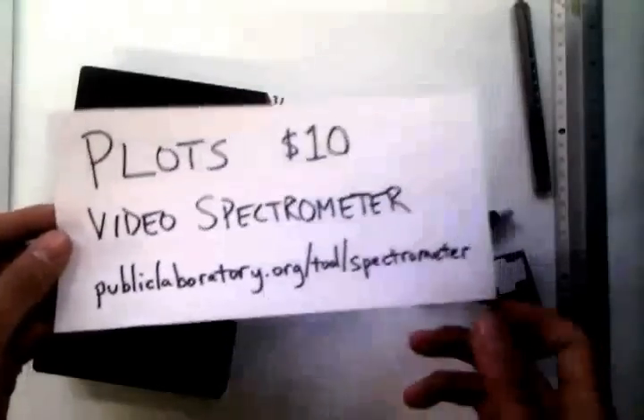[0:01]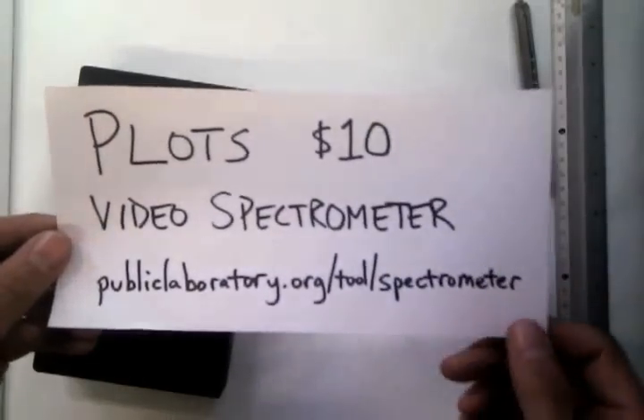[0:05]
This is a video tutorial for the Public Lab $10 video spectrometer. You can read more about it at this web address. And to start with, we're going to take
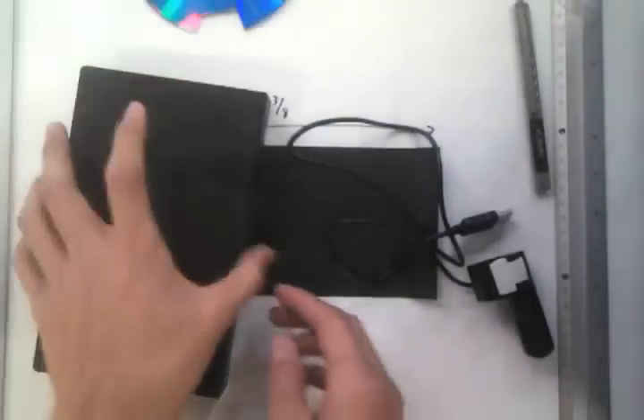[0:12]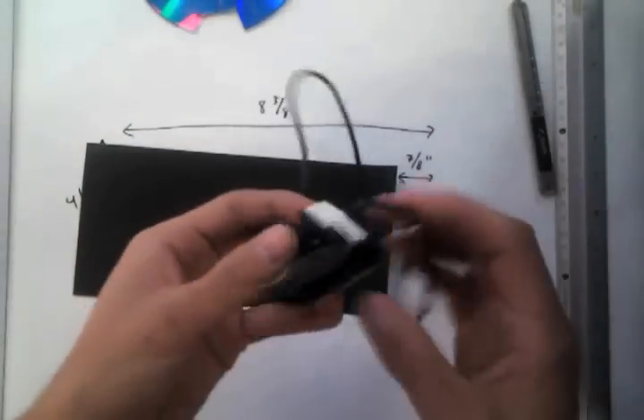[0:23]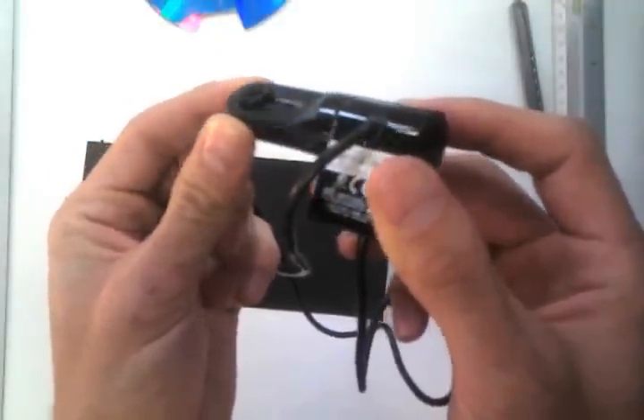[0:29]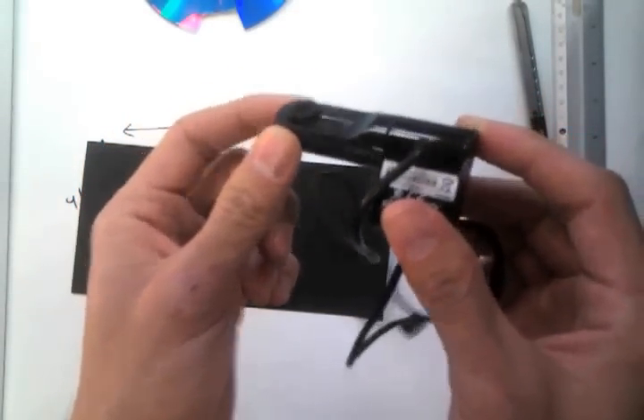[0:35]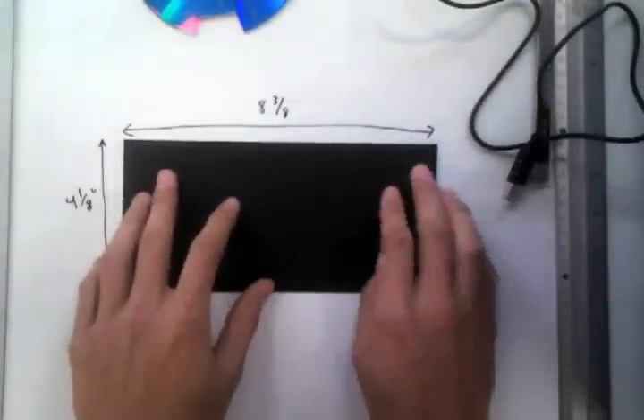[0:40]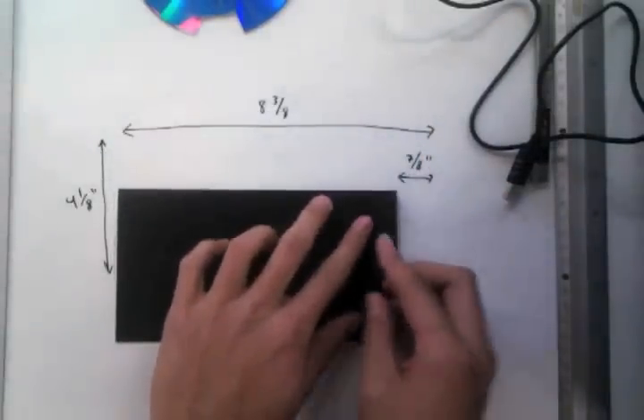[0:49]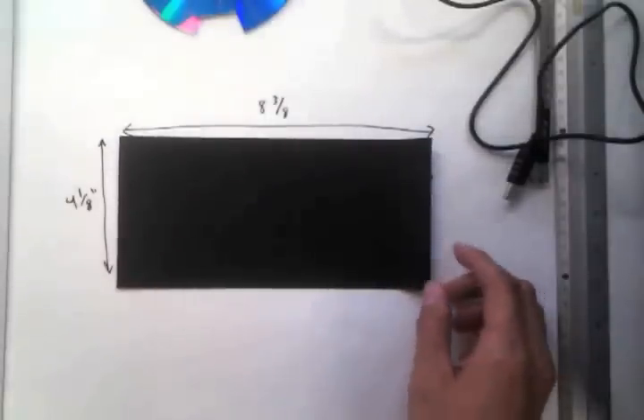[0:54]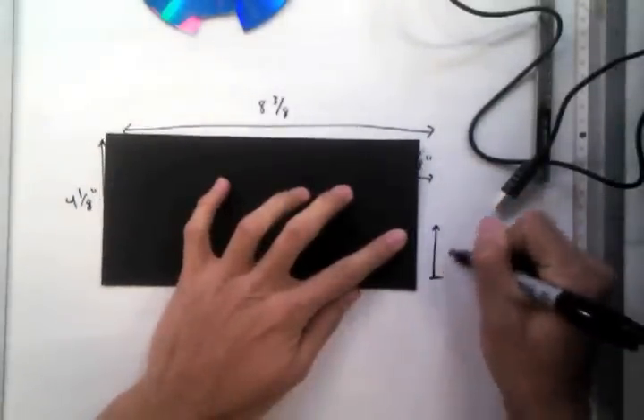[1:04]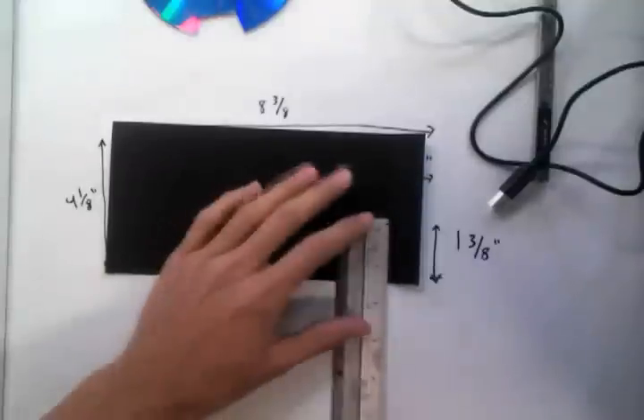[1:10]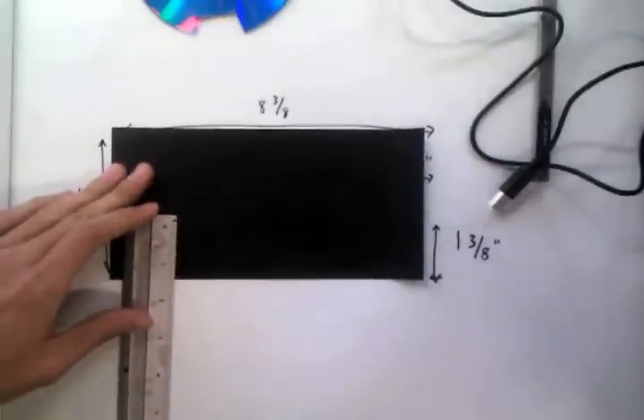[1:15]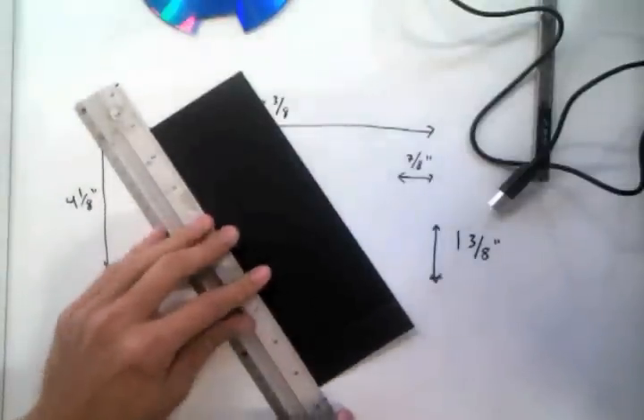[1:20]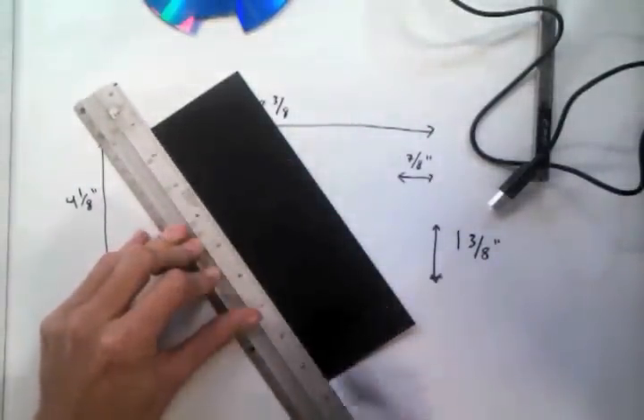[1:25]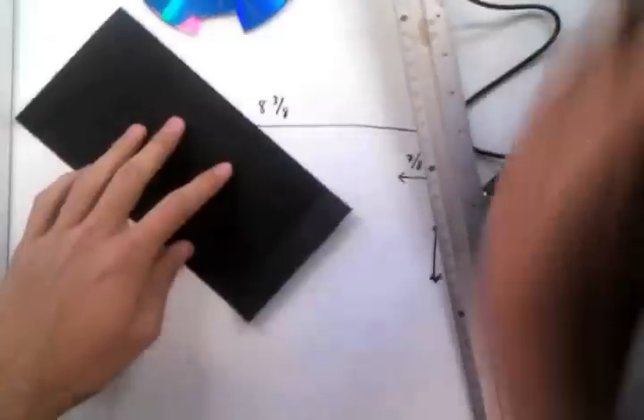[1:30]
And now what I'm going to do is draw a line on the card that's 1 3/8 up from the bottom. So that's 1 3/8 from the bottom here. Let's just get that right. And I'll just draw along that. Doesn't have to be too precise. And then I'm going to do something quite careful here.
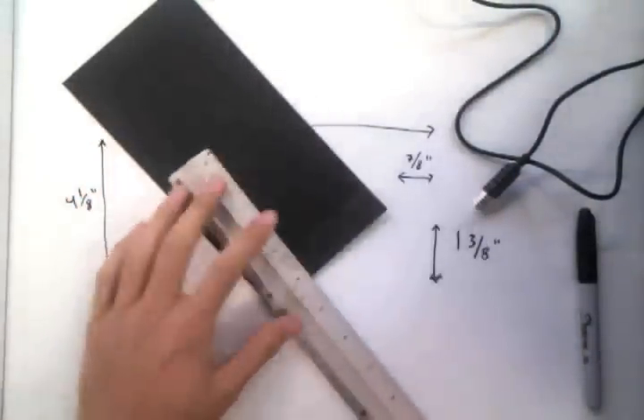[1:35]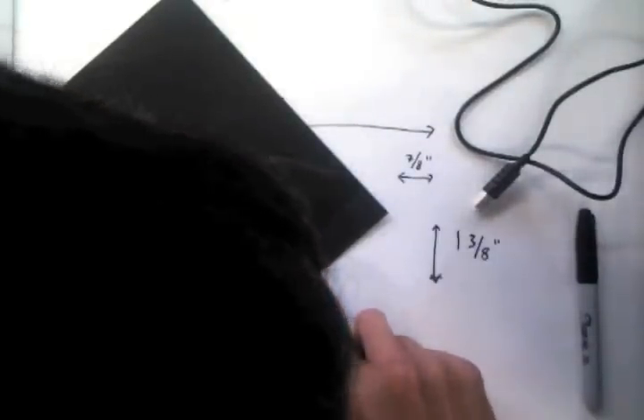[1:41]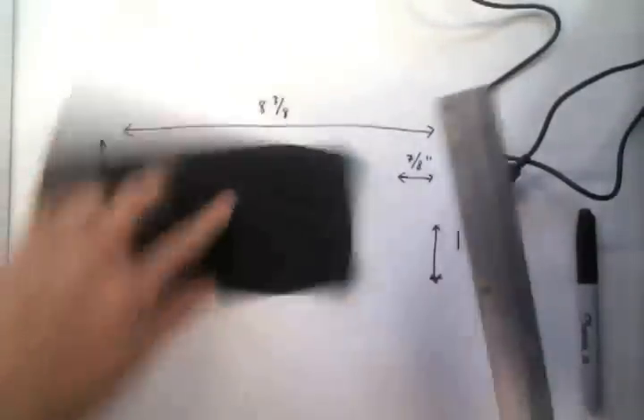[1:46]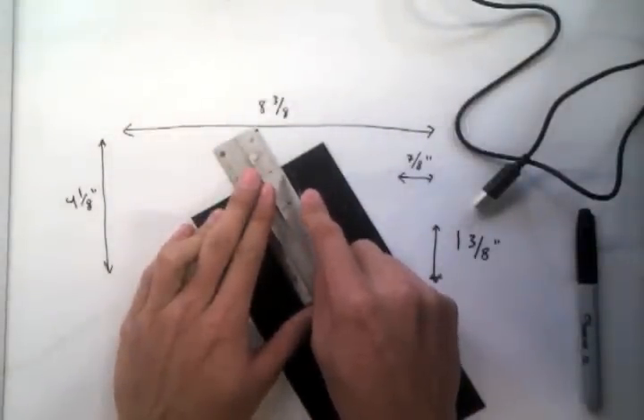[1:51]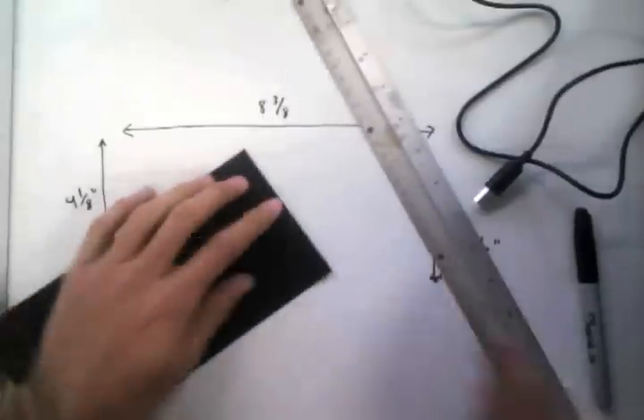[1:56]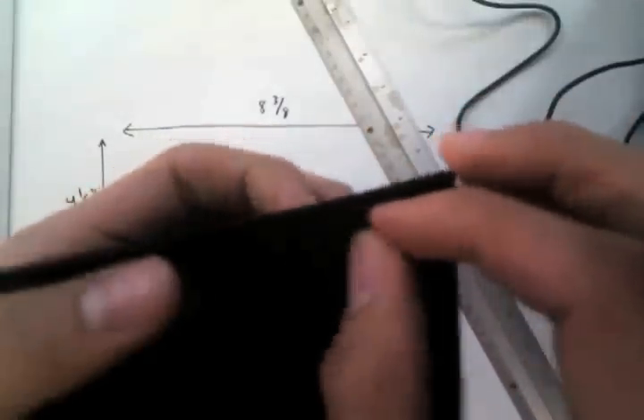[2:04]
I'm going to cut a narrow slot in this spot here so that light can shine through. I'm not going to cut all the way to the end. I'm just going to leave a little bit of space there. And I'll hold it up so you can see in a second. It's got to be like a millimeter or so wide. It's really very narrow, and as clean and consistent as you can get it. It's worthwhile to use a mat knife. And then you kind of pick that out. And you can see there's a very narrow slot there.
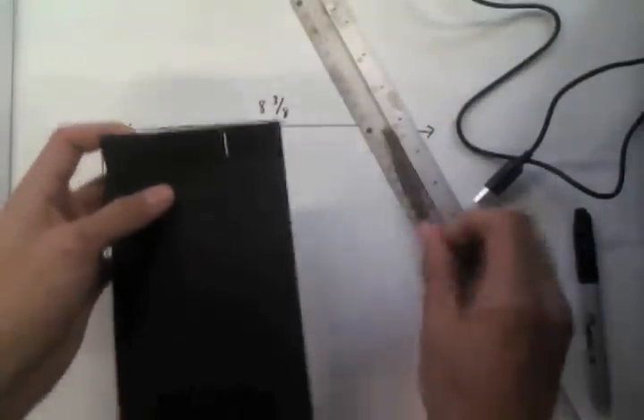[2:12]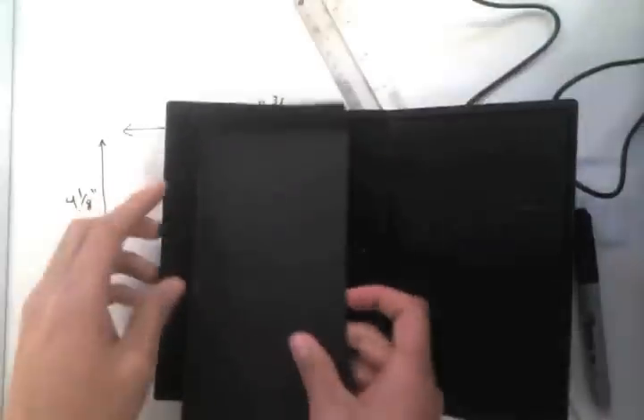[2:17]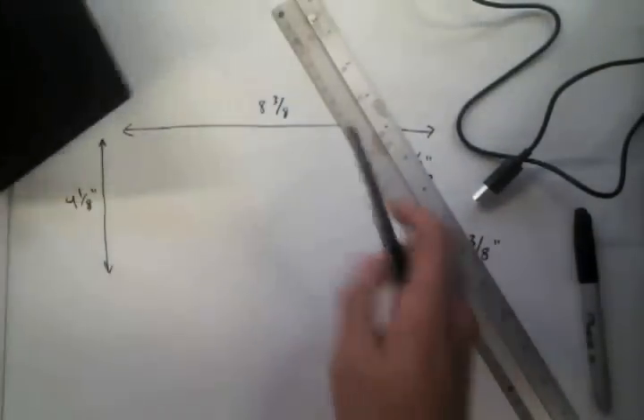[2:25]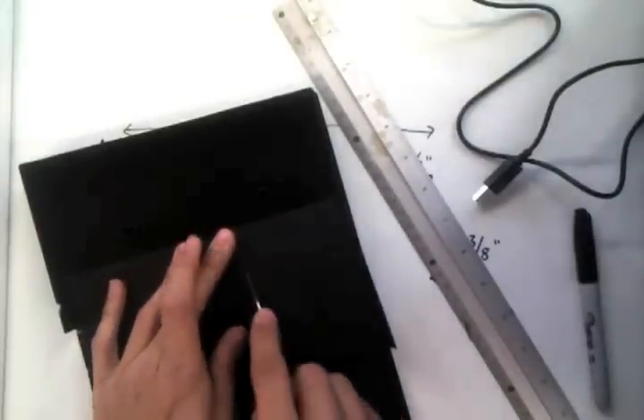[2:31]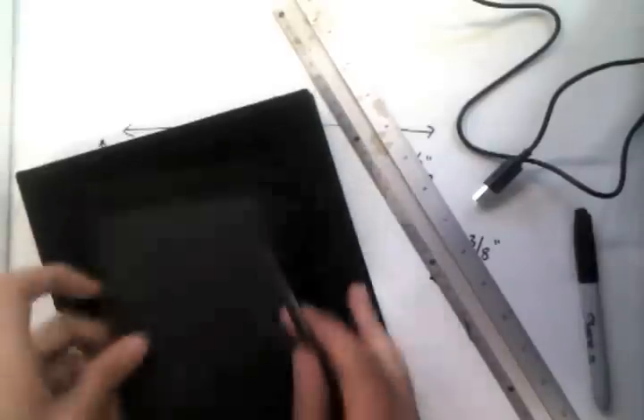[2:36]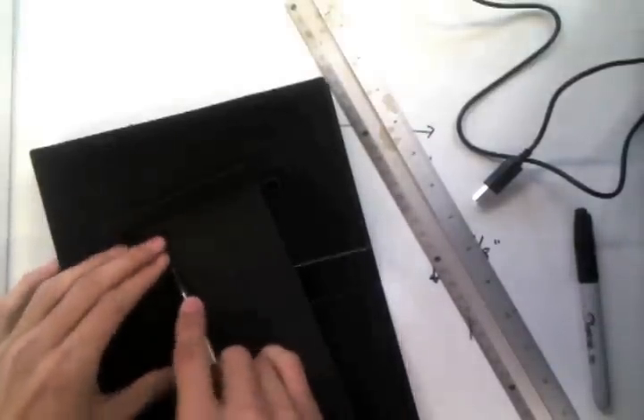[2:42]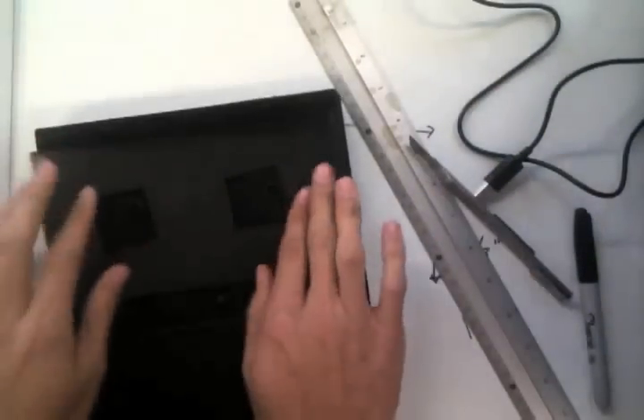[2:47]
And now I'm going to open this up and put it inside here. Now, I'm going to have to cut some holes for these two nubs, which you won't have to do on all VHS tapes, but this one you do. So I'll just kind of wing it here. Doesn't have to be super precise. There you go. And it kind of fits snugly in there.
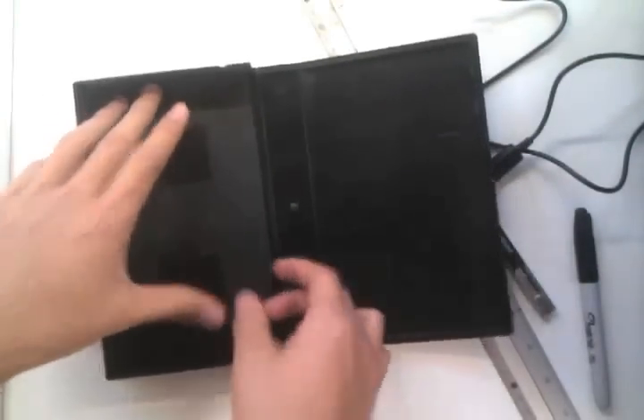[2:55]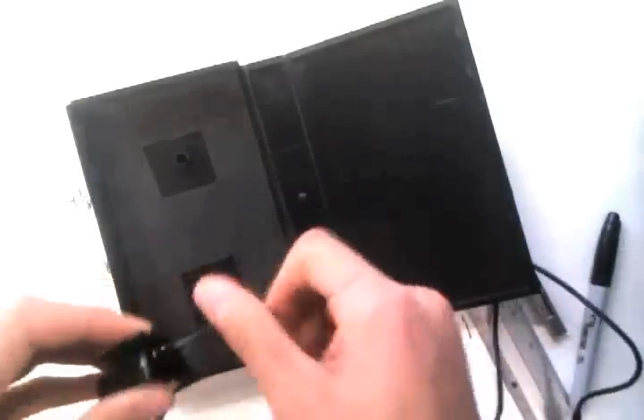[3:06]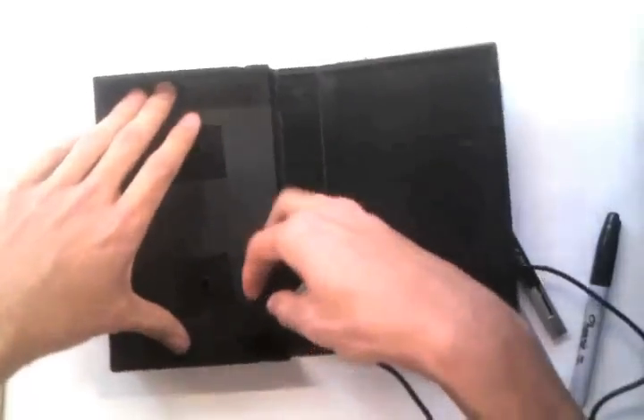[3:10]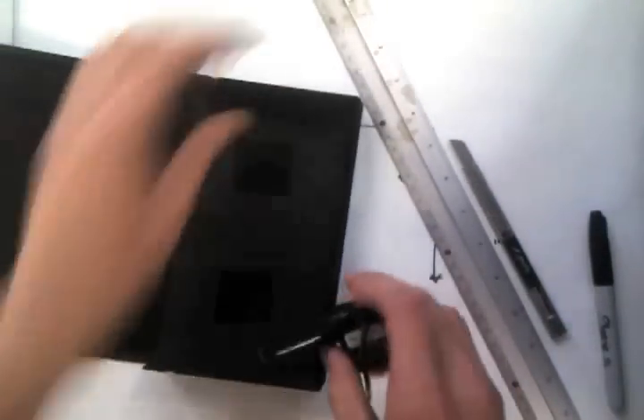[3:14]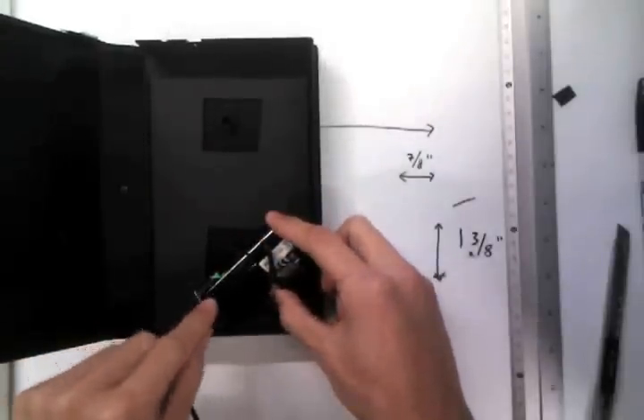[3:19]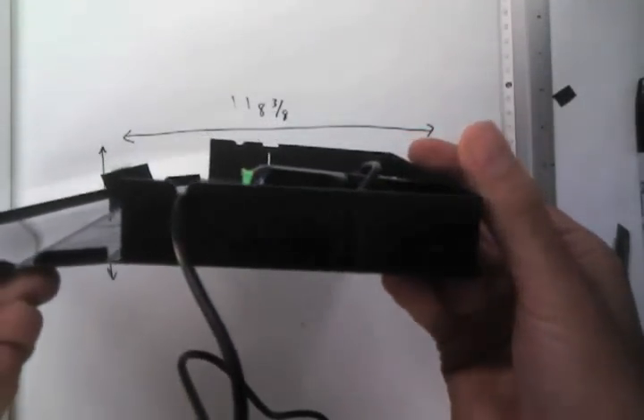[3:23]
Now, I'm actually going to put it this way. Or no, this way. And then what's going to happen is this camera has to be set up so that it is at a diagonal and it exactly intersects that line. So sometimes you've got to find a configuration where that will work. Okay, so this is probably the best orientation for this camera. You can see that it's lined up with the slot.
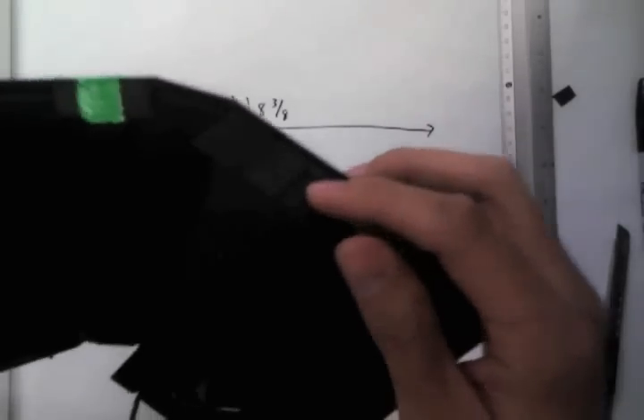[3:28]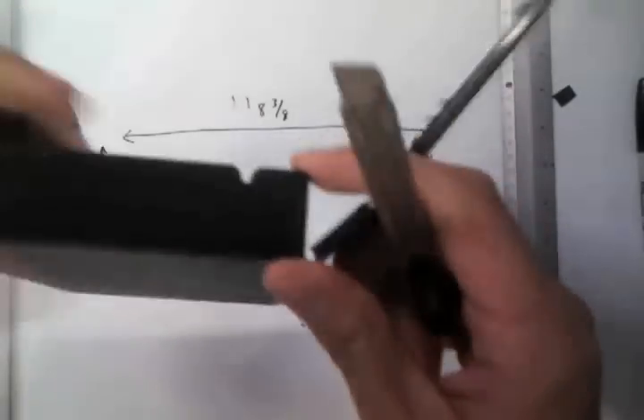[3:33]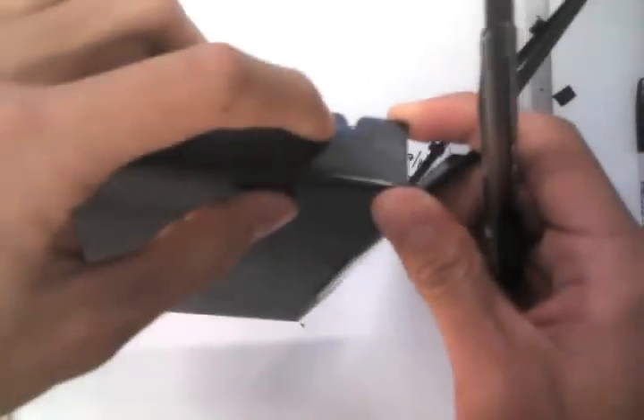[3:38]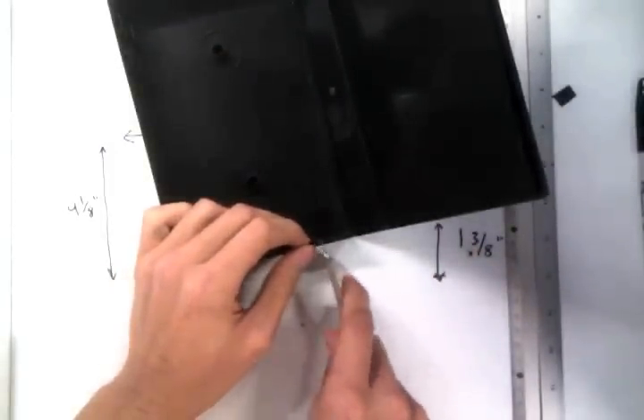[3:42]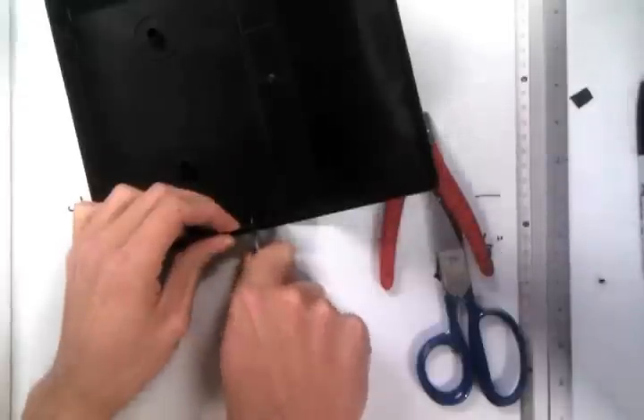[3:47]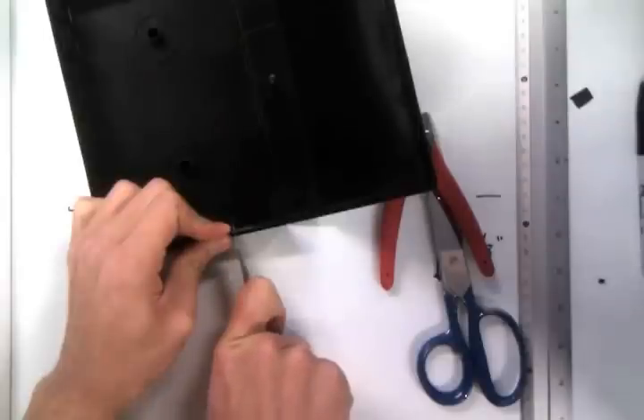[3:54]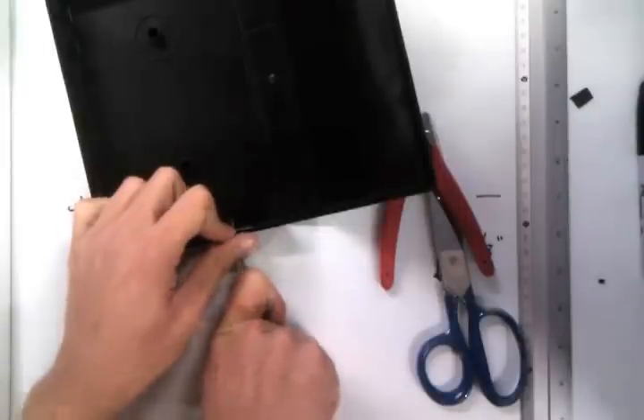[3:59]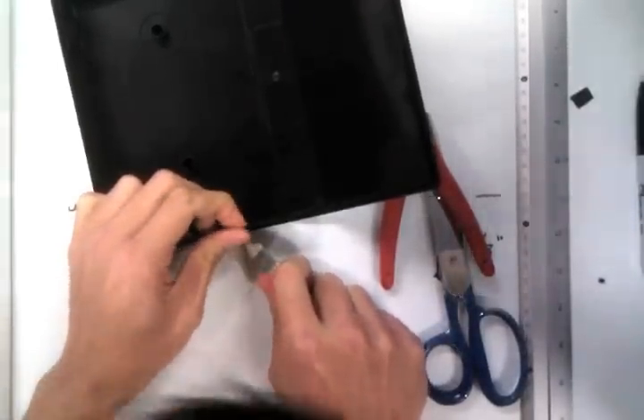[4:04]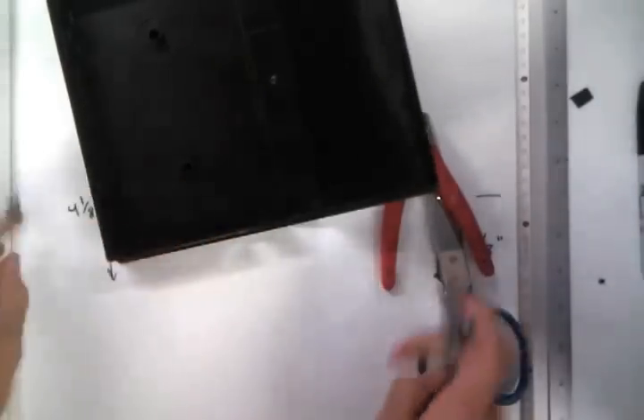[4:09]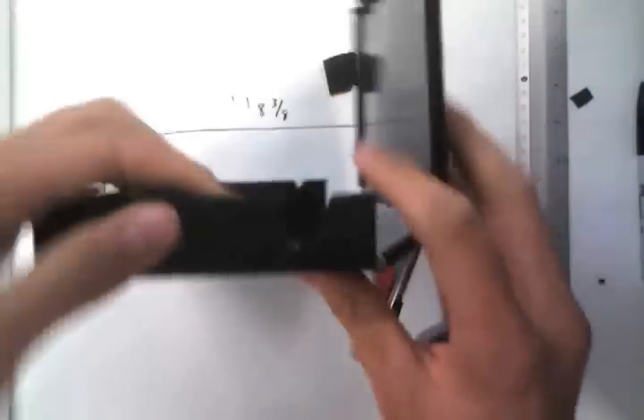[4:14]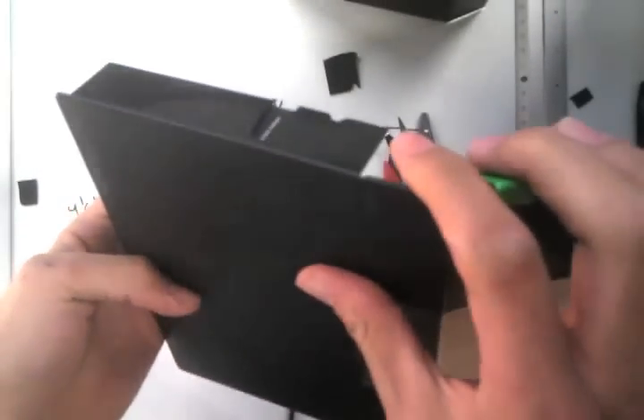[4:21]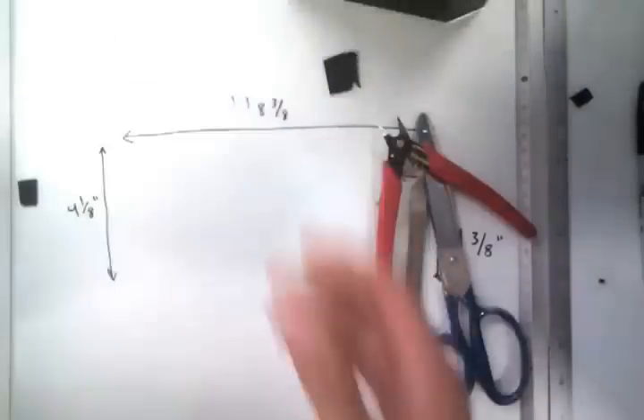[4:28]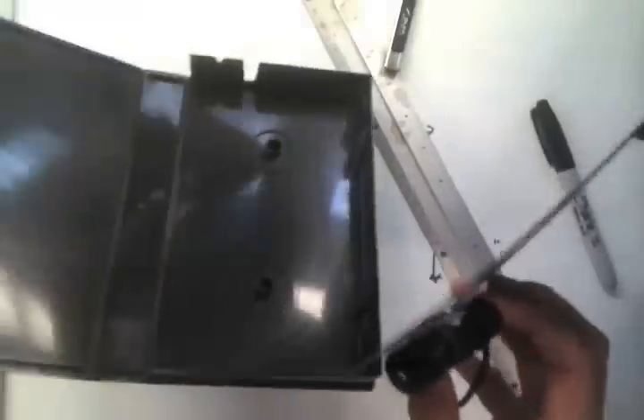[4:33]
And then we're going to have to cut a hole up here. I actually already cut it, but I'll show you how to do it on another VHS box. You have to look for where it's going to line up with that slot and just cut a large hole there. It doesn't really matter how big it is because most of it's going to be covered up by your paper anyway. There you go. I did a kind of messy job, but it should be fine. And as you can see on our actual one, that insert allows light to pass through the slit. So we have this cut, and it's sitting inside of there.
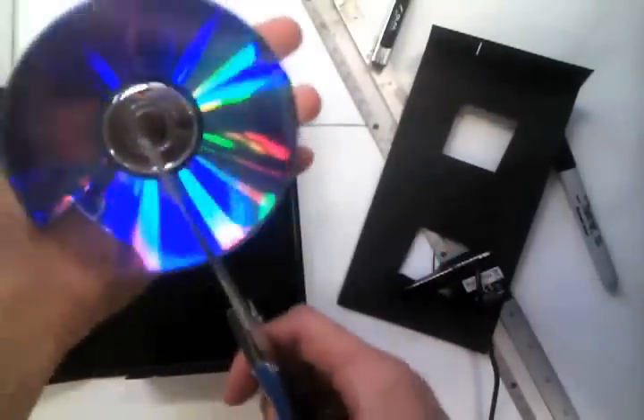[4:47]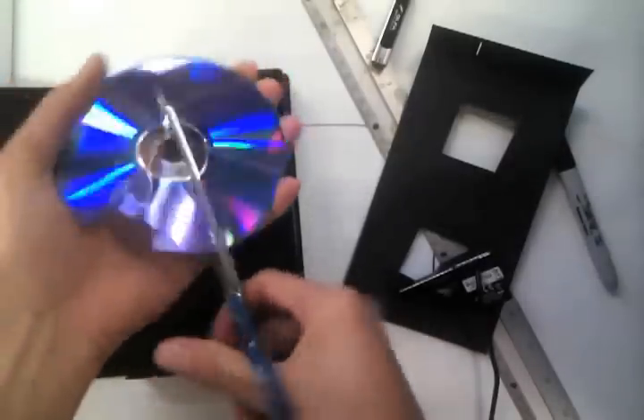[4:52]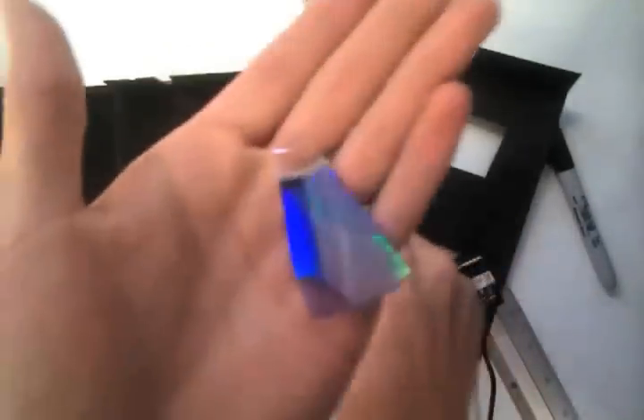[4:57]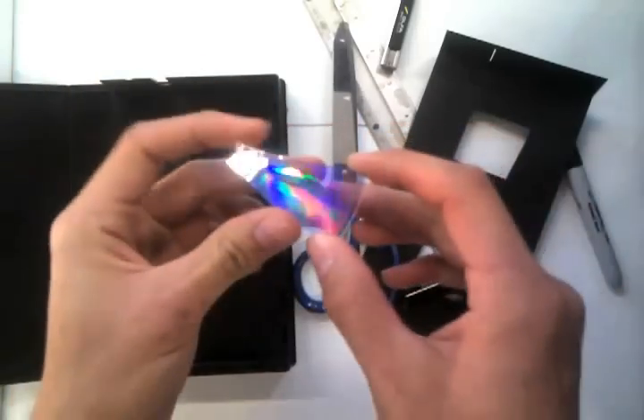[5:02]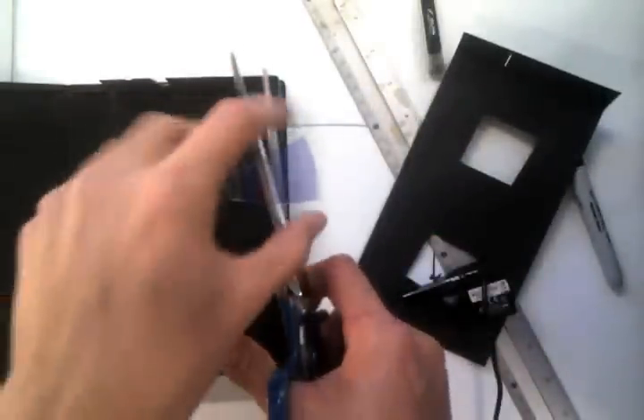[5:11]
Now we have to take a piece of the DVD. And just using a nice big pair of scissors, I'm going to cut a pretty big section out of this DVD. There we go. And you can see it's already started to crack, but you can peel it apart like that and throw away the reflective part. And you just want this. You can cut it down a little further even.
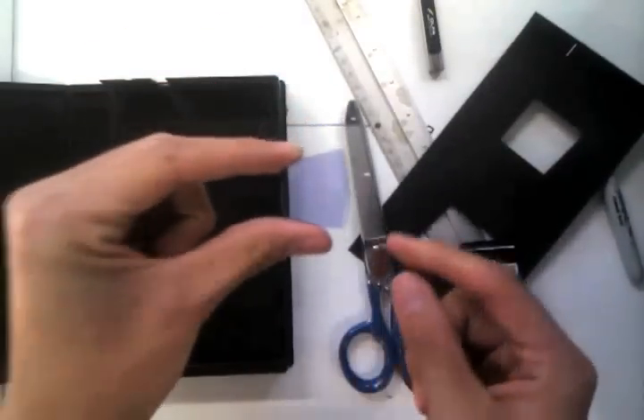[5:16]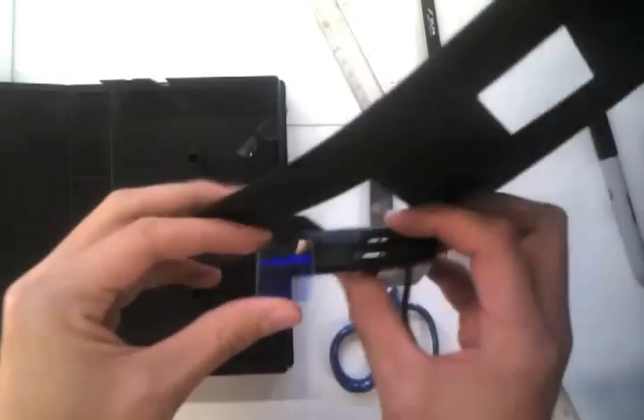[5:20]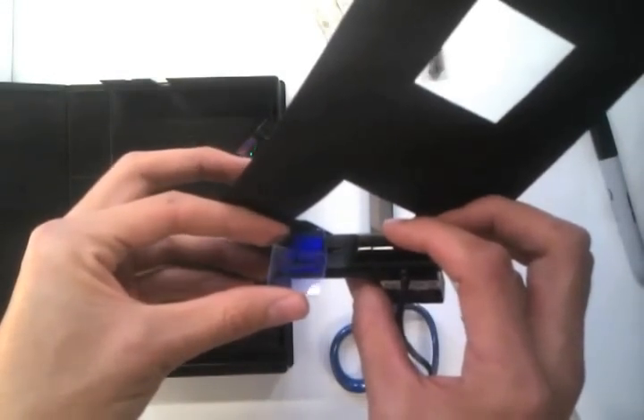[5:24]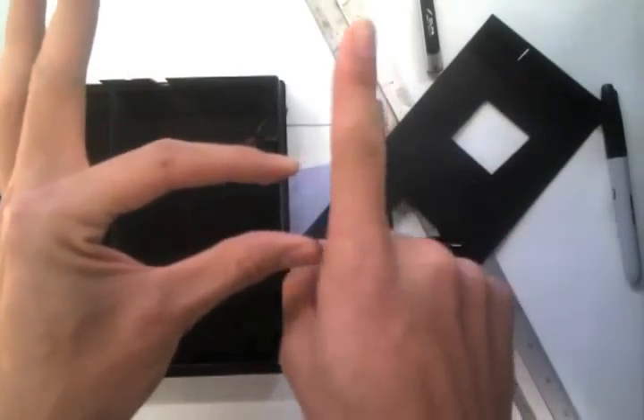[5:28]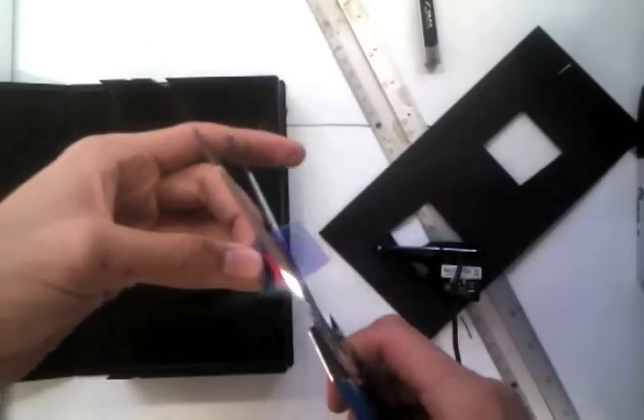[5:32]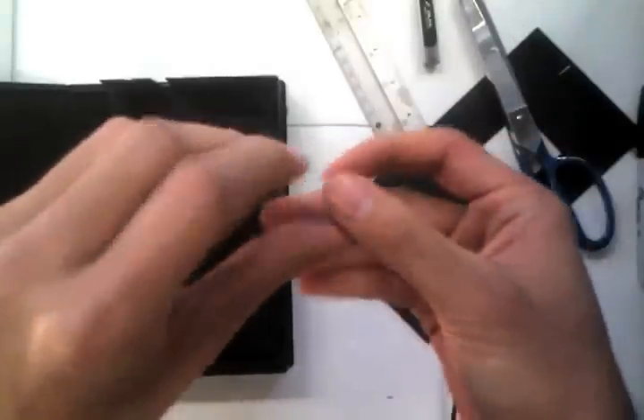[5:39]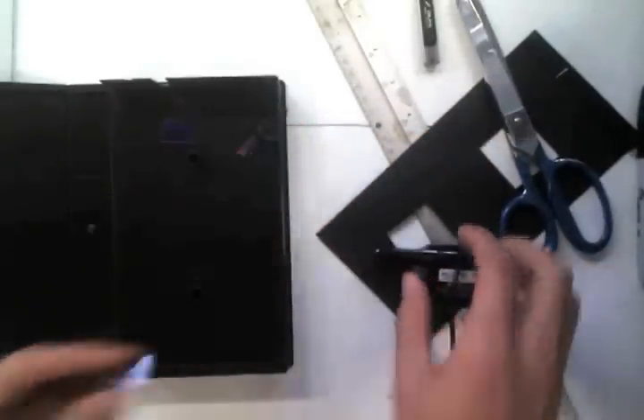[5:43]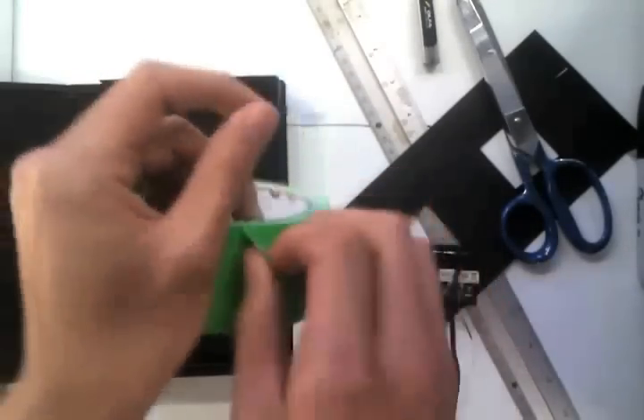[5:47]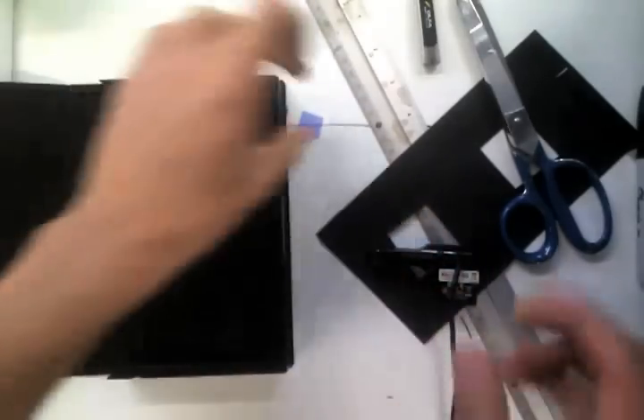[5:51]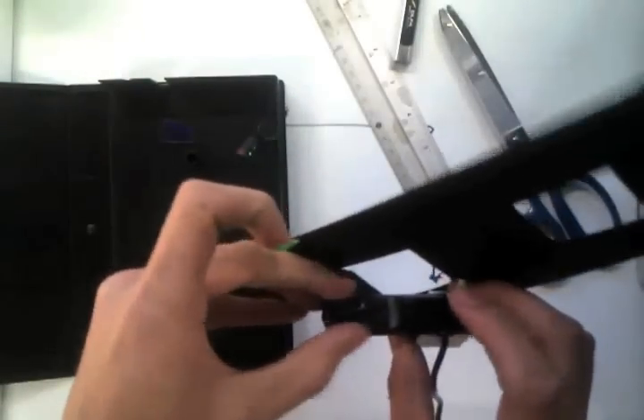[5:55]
And then, remembering that this is the outer edge of the CD, or the DVD, we have to glue it or tape it onto the video camera like this. So when the video camera is running, this is still up and this is still down. So I'm going to go ahead and do that real quick. I'm going to cut it pretty small, still maintaining that outer edge along here. And I'm just going to use some duct tape. The straighter up and down this is, the better your spectrometer will work.
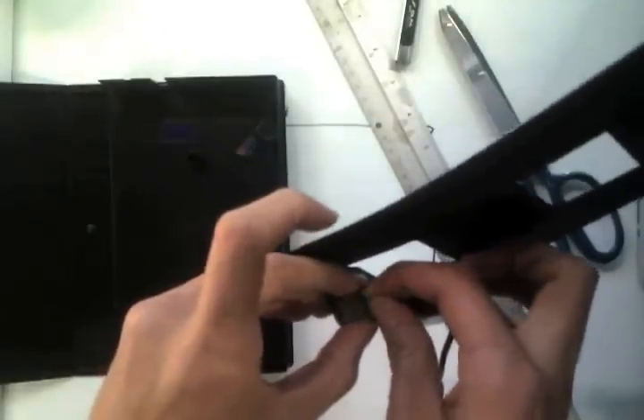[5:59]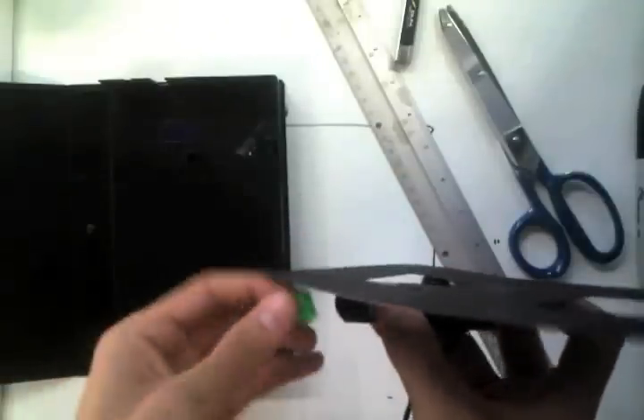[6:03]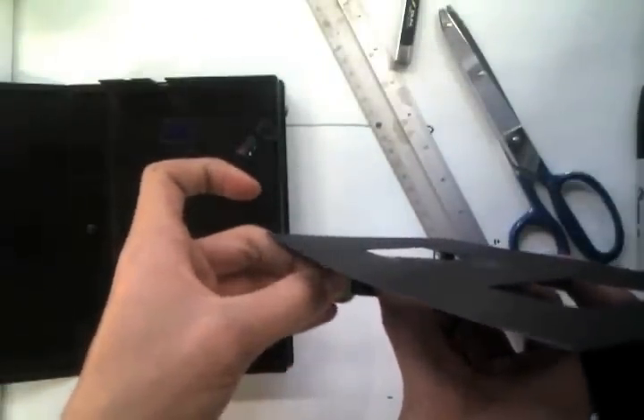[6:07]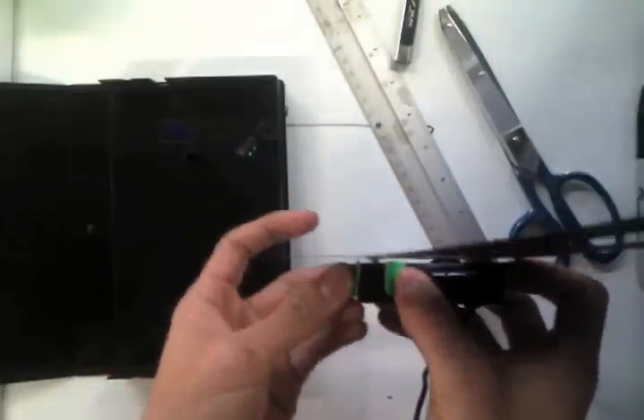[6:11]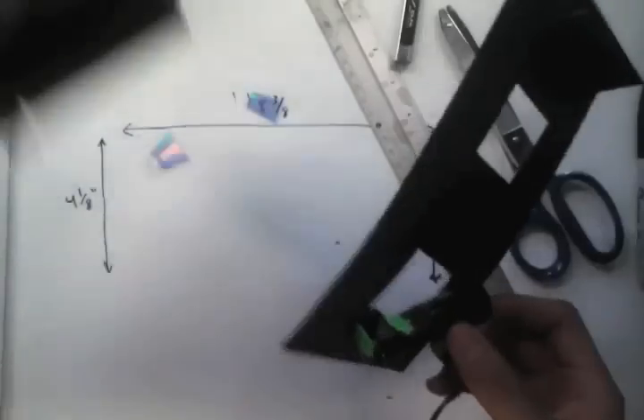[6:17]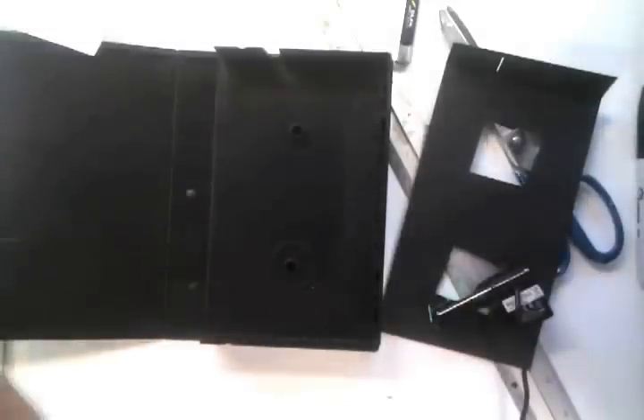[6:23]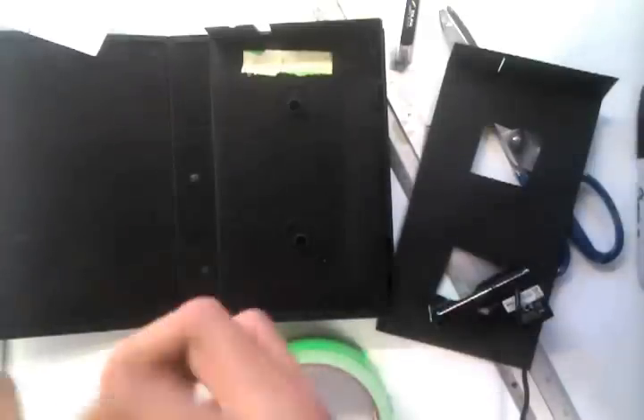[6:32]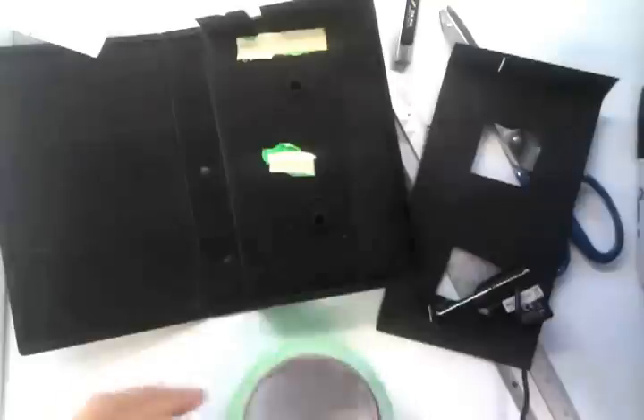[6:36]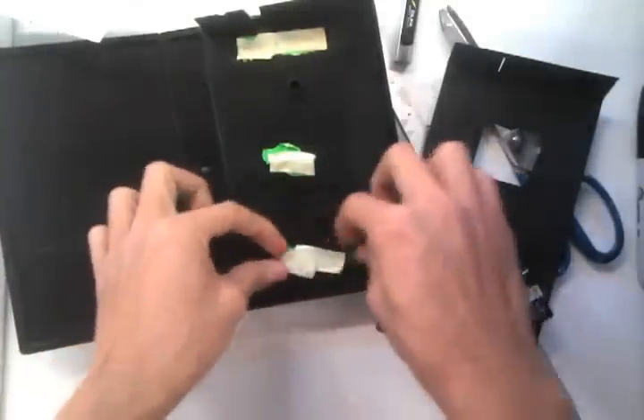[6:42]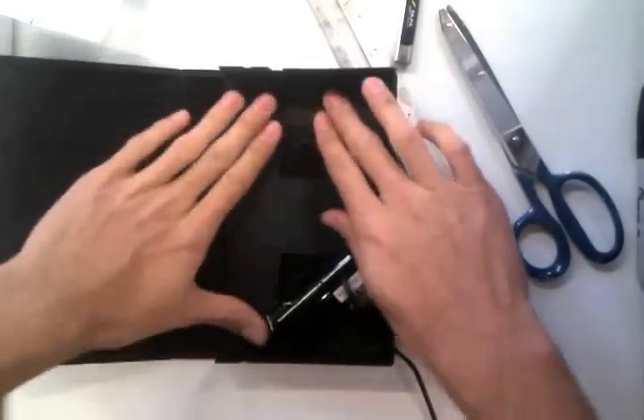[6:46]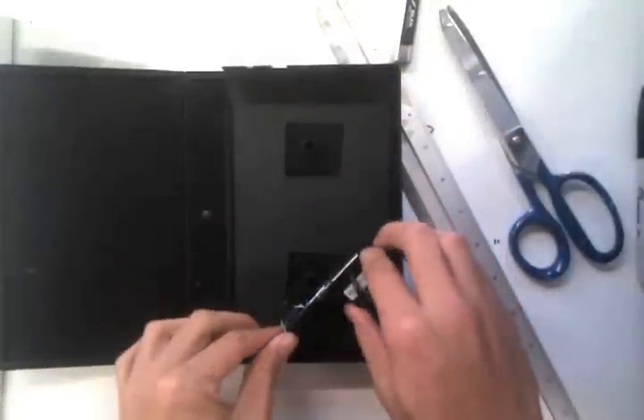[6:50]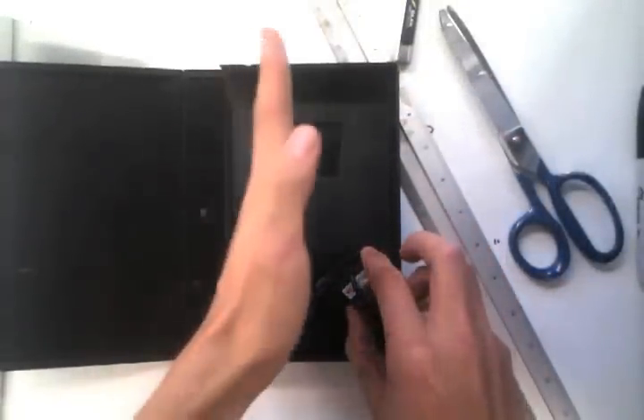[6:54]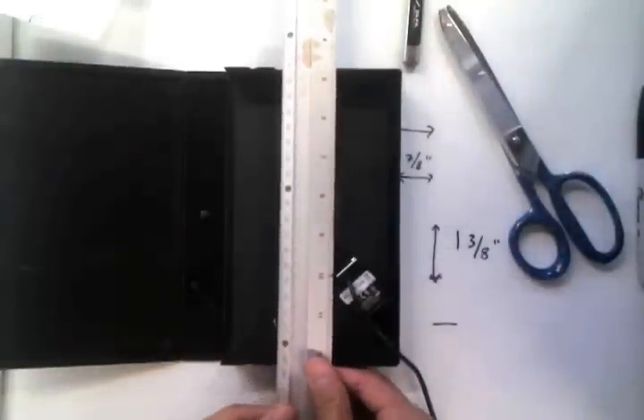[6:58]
There we go. That's pretty good. And we just empty this out, set it in here. I like to use duct tape to fix it. And the webcam is just at about a 45 degree angle with that line still maintained, the line from the hole straight down to the lens.
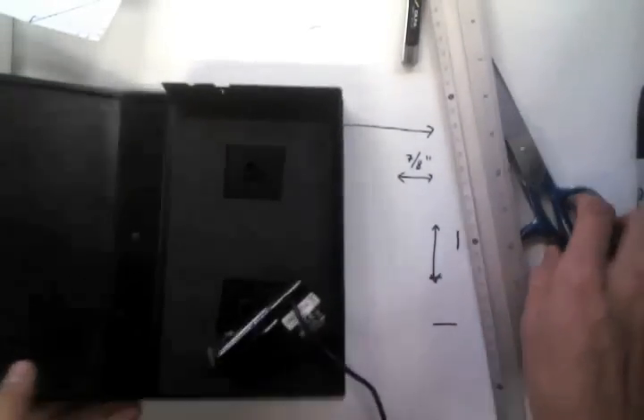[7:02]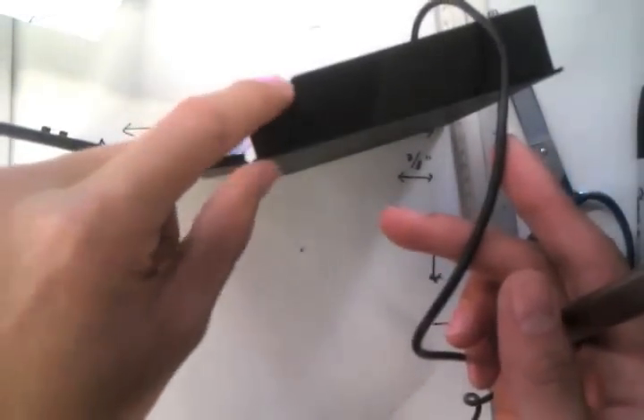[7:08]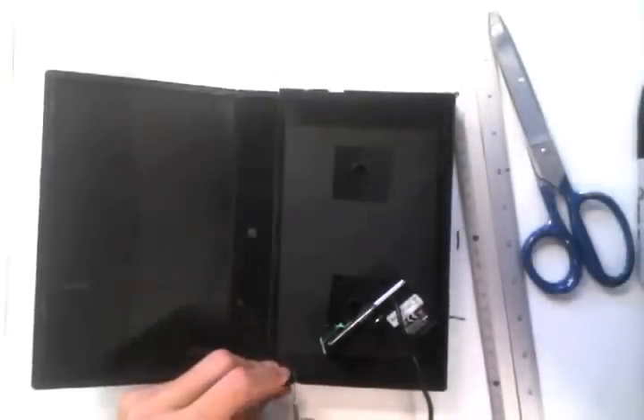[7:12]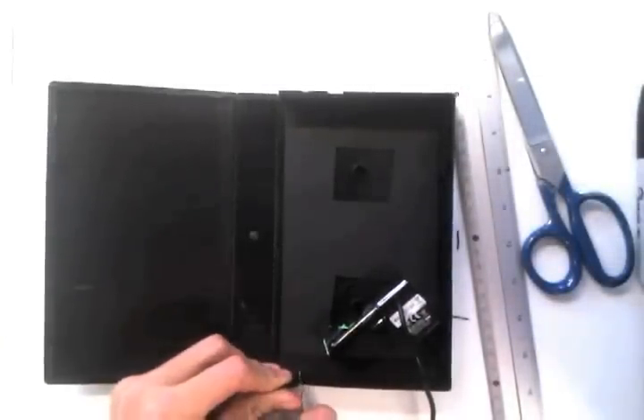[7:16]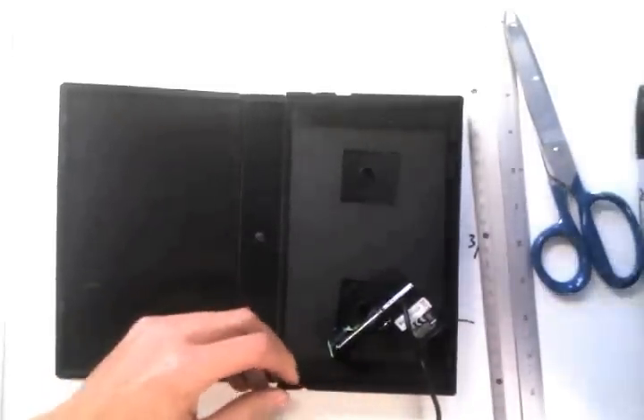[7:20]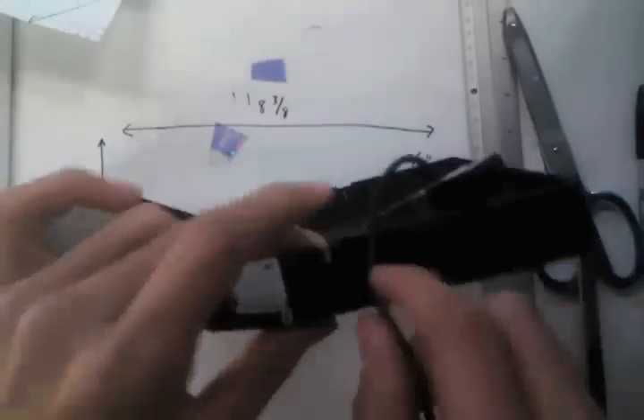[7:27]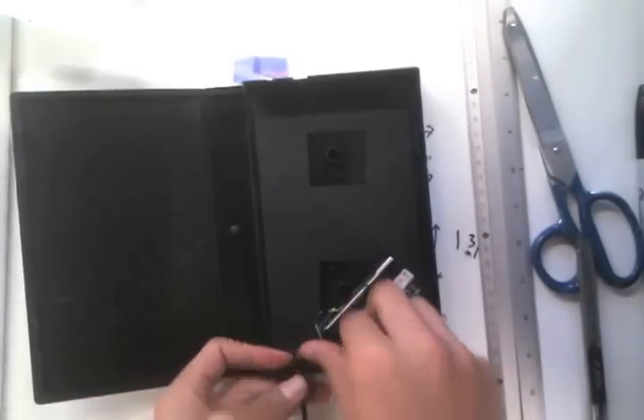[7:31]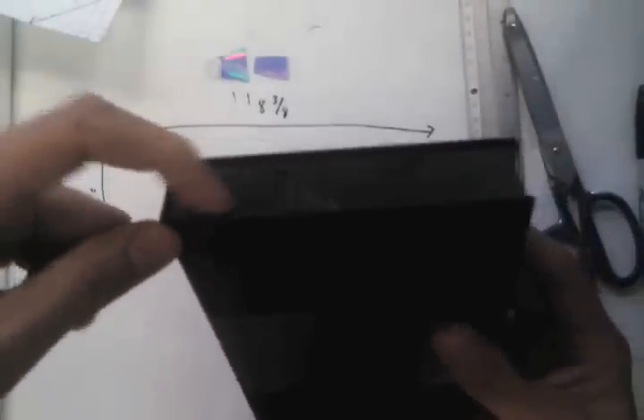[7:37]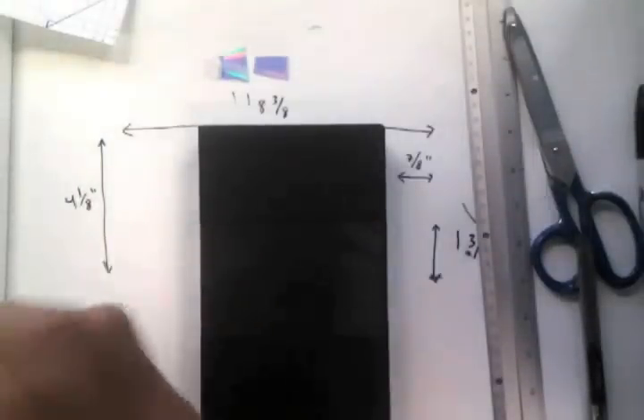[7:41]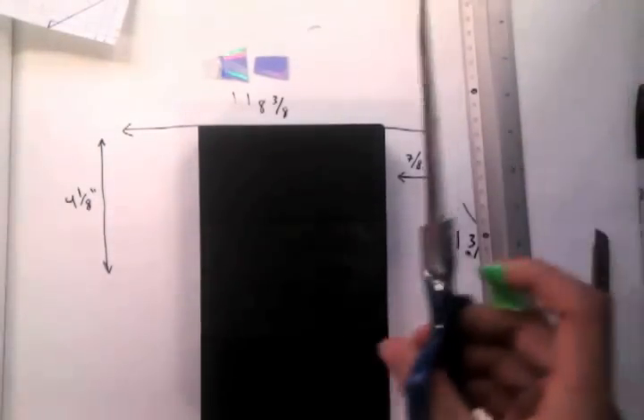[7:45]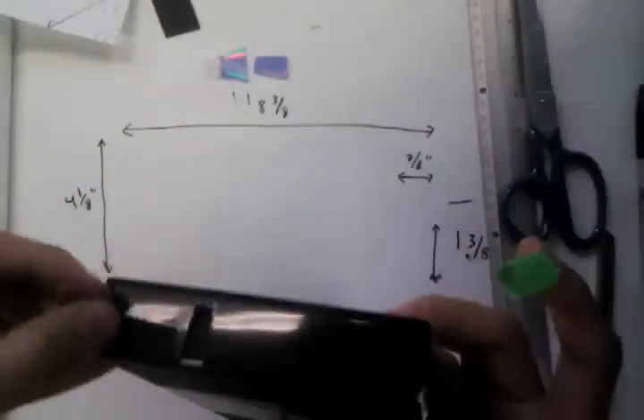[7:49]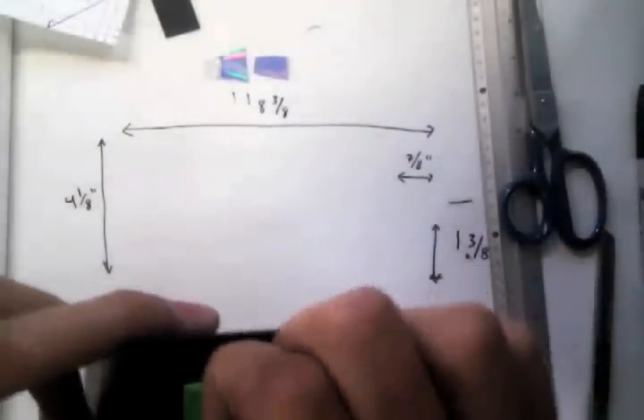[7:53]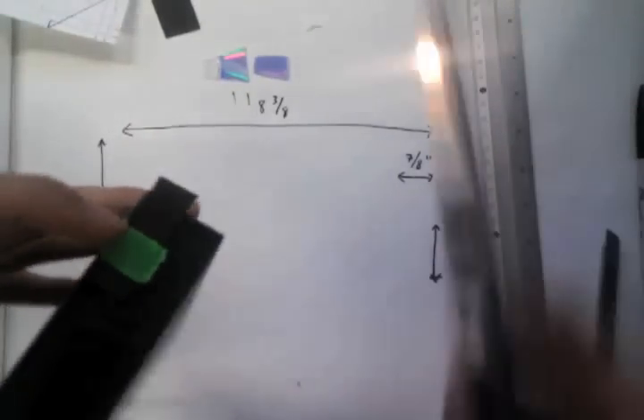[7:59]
And now the last thing I'm going to do is the cable has got to come out, so I want to cut a little deeper notch in here just to make sure it can come out without causing trouble. All right, I've cut that notch pretty deep, and I'm pretty sure we can fit the webcam cable in there. It will shut properly. And that's pretty much it. There's a little leak of light right here, so if you want to, you can tape over that. Sometimes it works just to take a little strip of paper and tape it in place. Block that. You can do a tidier job than I did, or do it from the inside.
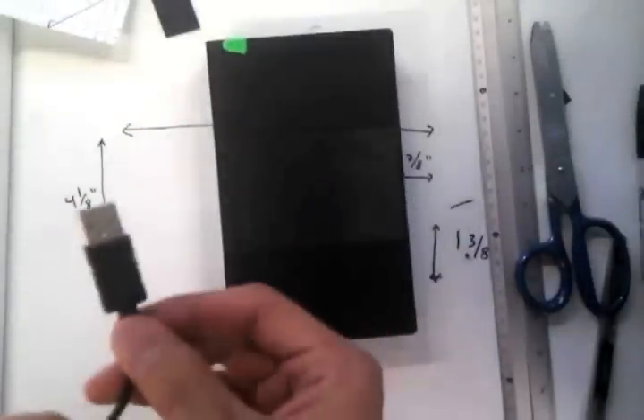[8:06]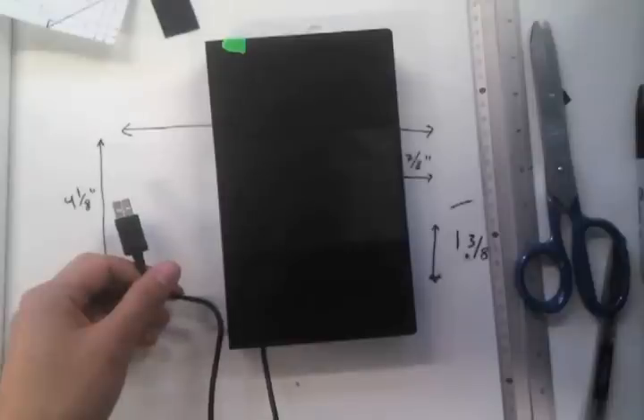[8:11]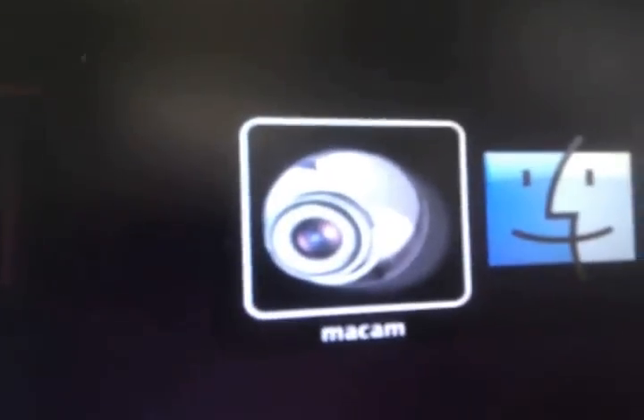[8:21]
And then you have to plug this in and check that the whole thing works. So now we've connected it to a laptop, and I had to use a program called MacCam to actually get the webcam itself to work on a Mac. And you can see we have a device here, and that's the slit that we're going to use to actually image things. I've set up a really bright fluorescent bulb here, and I'm just going to point it down there, and you can see we have a spectrum.
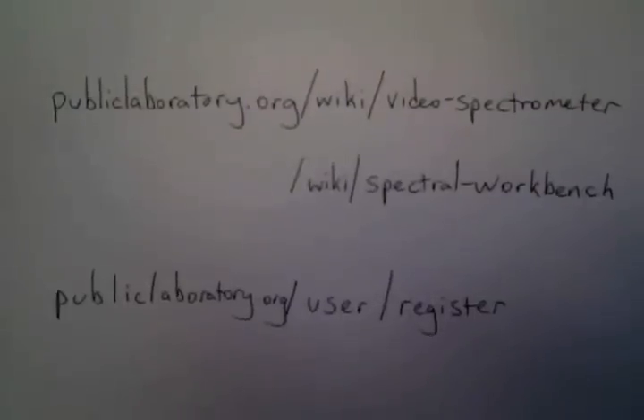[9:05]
And it's a pretty good resolution spectrum, too. There's some reflections because the top of the case is shiny, so that's creating those two stripes above. But if you want, you can actually add more black paper, kind of a matte black paper, and you'll get rid of that reflection. So there you go. That's the webcam.